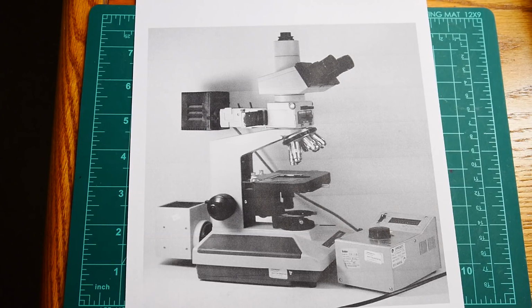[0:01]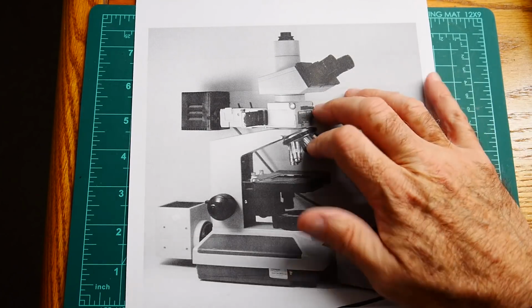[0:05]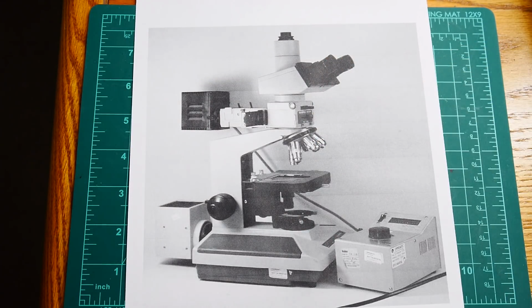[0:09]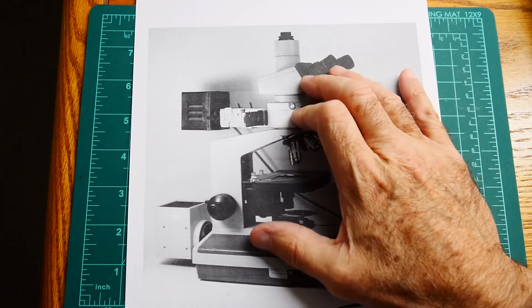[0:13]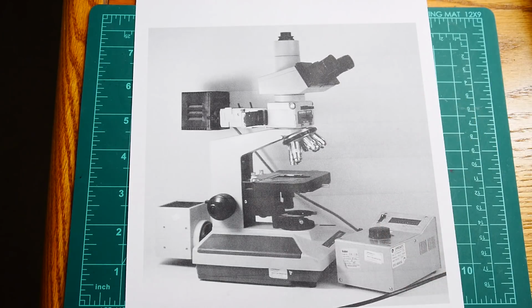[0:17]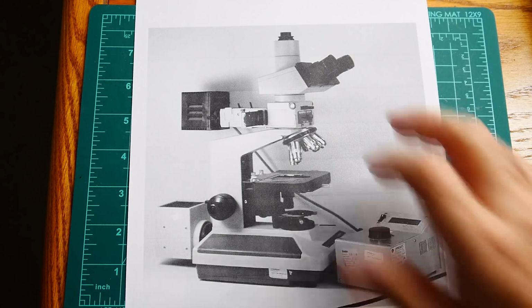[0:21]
So I thought I'd talk about microscopes. I used to have one of these microscopes. It was very nice, and it was great. I loved it. But it's very big, very heavy, took up lots of room. And I got an offer that I couldn't refuse, so I sold it. And then immediately hated that I had sold it.
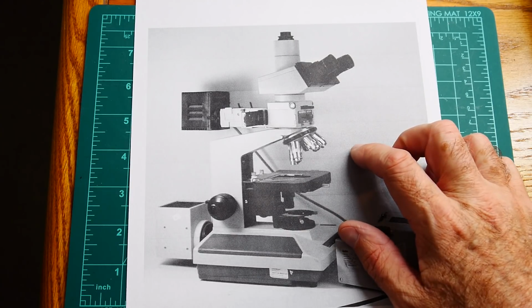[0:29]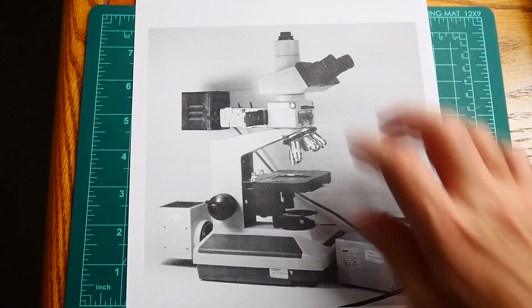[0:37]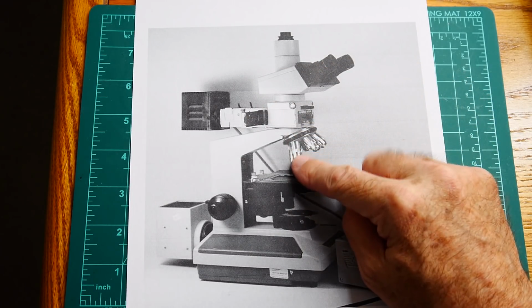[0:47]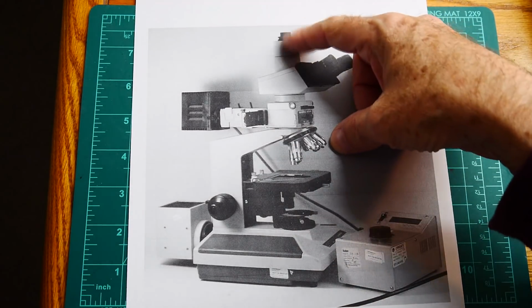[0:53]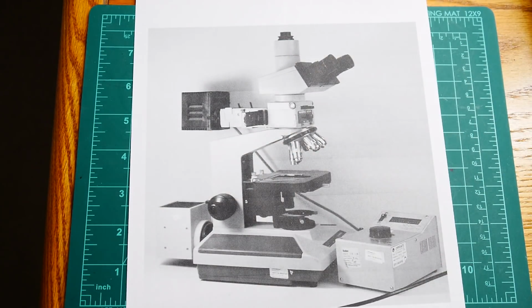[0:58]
Because it is good for really, really fine stuff. I have a nice stereo microscope, which I use, you know, 95% of the time, but when you need one of these, you need one of these. And so I thought, well, maybe I don't need all of it. Maybe I just need pieces of it. I need a good objective lens. I really don't need to be able to look through it because I'm just going to put a camera, and I can just look at the image through the camera.
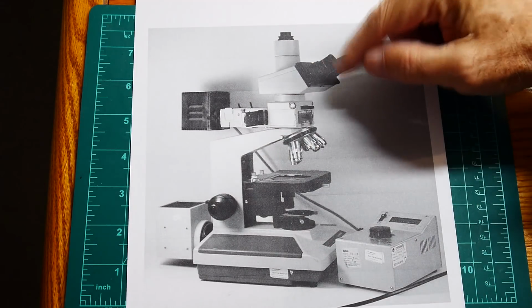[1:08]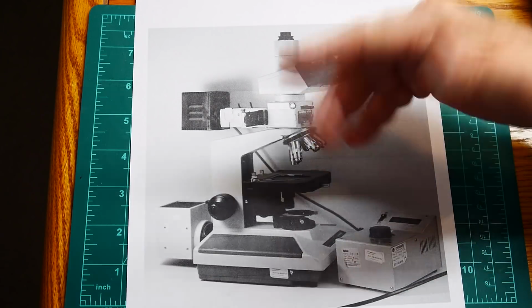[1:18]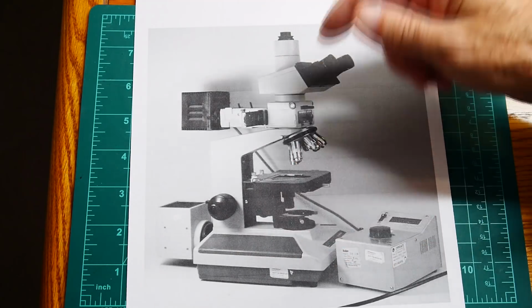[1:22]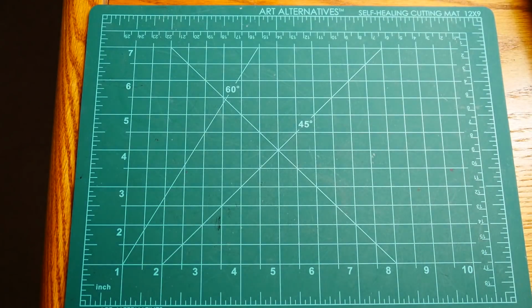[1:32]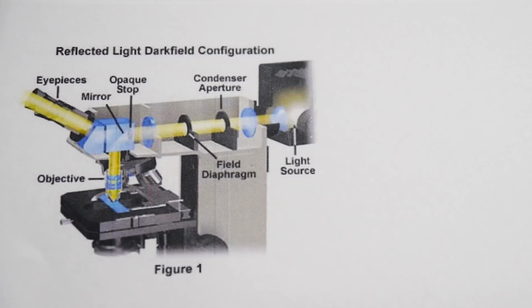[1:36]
So I thought maybe I could just strip this down and do with a very, very little of it. But the one thing that these have that makes them so valuable is they have what's called dark field illumination. You can set this up so the illumination comes from the bottom. So if you're doing biological slides and stuff, you need to see through the material, you can go from the bottom. But what I really use these for is for the top illumination, which is called dark field illumination. So let me describe what dark field illumination is. All right, there we go. We can see it better now.
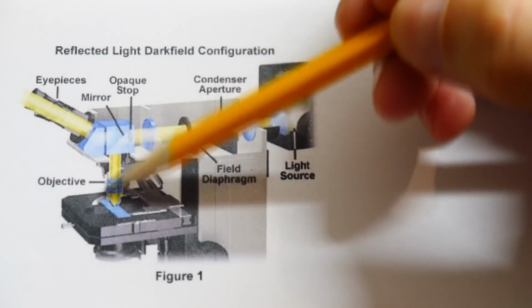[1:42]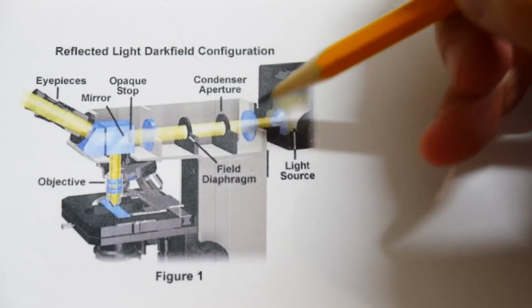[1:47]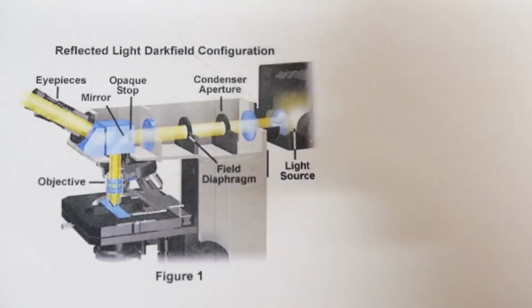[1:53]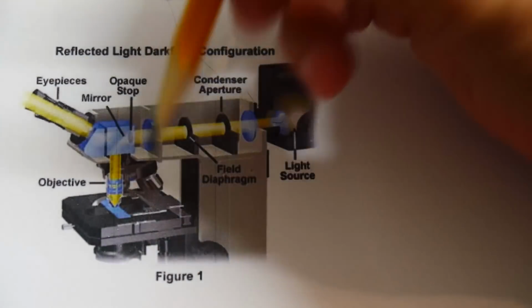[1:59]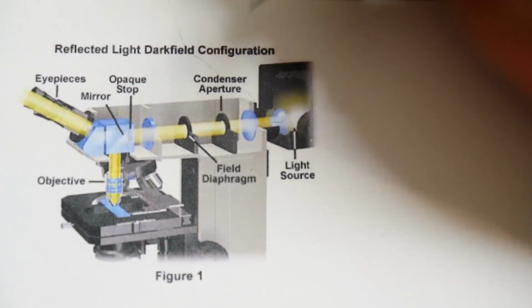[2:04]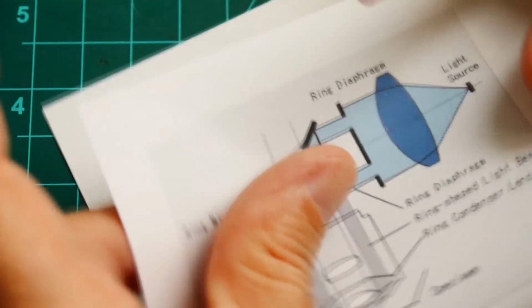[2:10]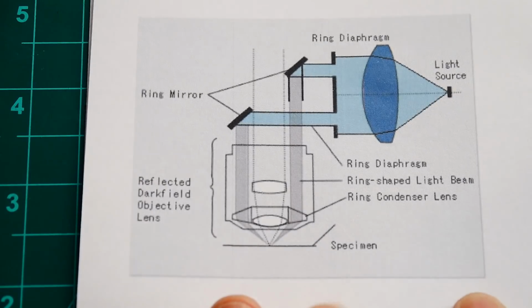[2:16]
So you look through the eyepieces and it goes down through the objective. So that's the normal path. But there's this big thing in the back here. There's this light bulb in the back and some condensers that make the light parallel. And then the light comes down and actually light comes in from the top. And you have to have very special objectives called dark field objectives that allow the light to come from the top and for you to be able to see from the top both, right? So that's a bit complicated. So let's look here at a different picture that'll make it a little clearer. Okay, there we go. All right, so this is not to scale, but it gives you the idea.
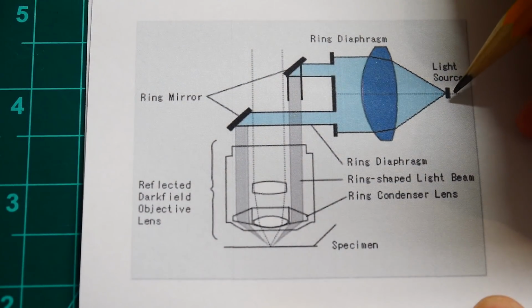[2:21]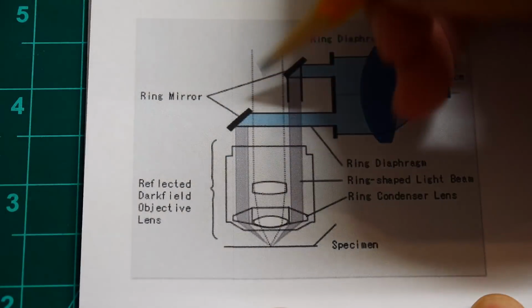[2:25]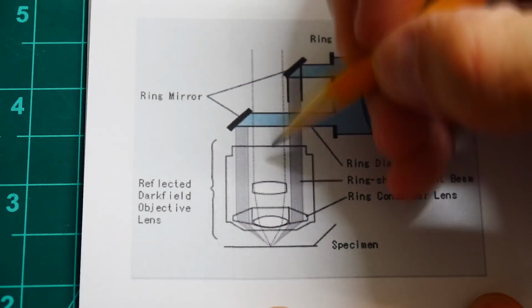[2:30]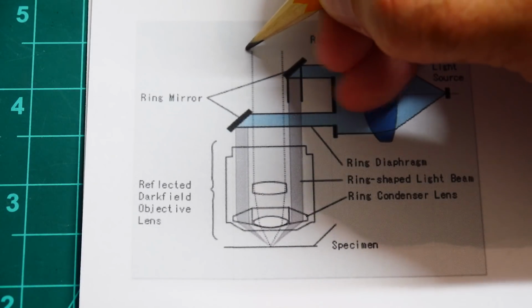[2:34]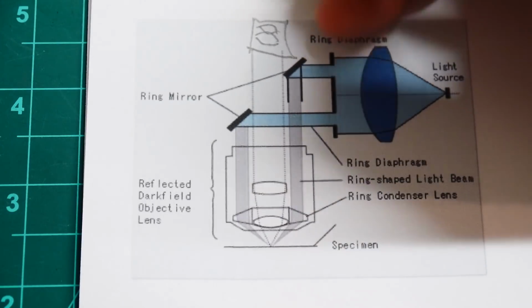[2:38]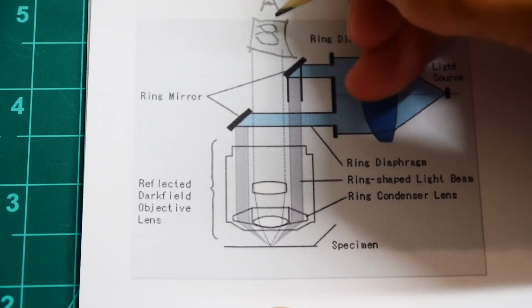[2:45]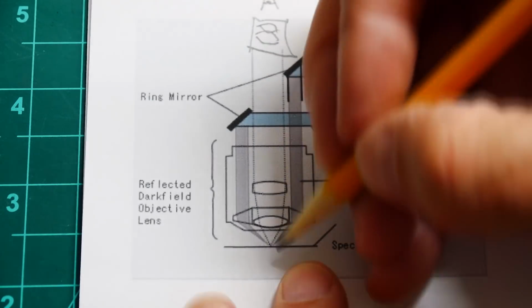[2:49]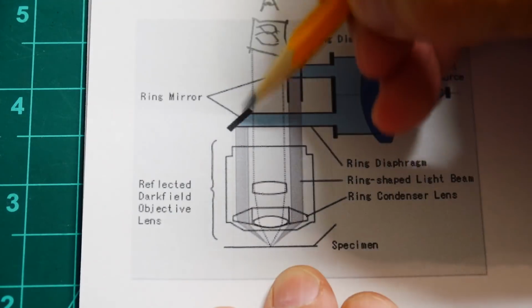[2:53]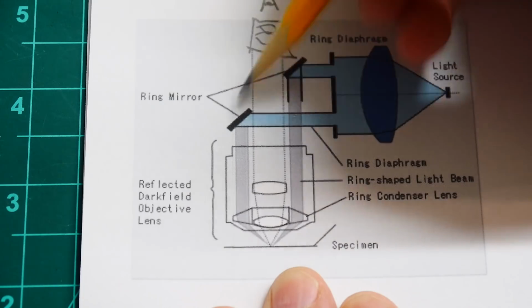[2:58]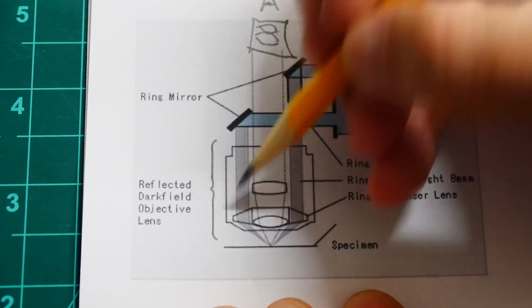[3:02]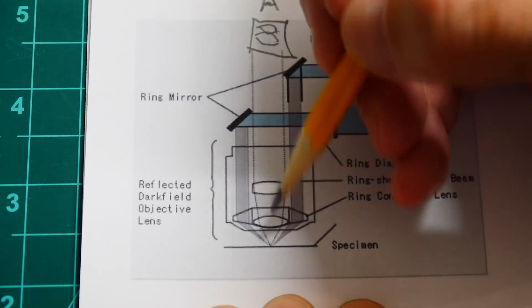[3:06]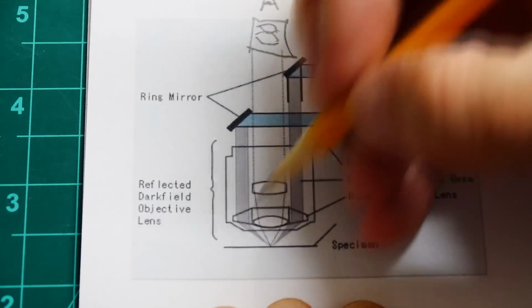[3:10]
There's a light bulb back here and a condenser that makes the light parallel. And then there's this mirror that looks like a donut. Okay, there's a hole in the middle of it, so you can look down. So up here you would have your eyepiece, right? You have some lenses in here and your eyepiece, and you would look down this direction, and you would go down the tube of the microscope and then the objective of the microscope, and that's how a microscope works. But what this has is it has this ring of light. So the light bulb goes to this donut mirror, and there's this donut of light that comes down the tube also. So you look down this dark area, and then there's this bright light in this donut shape coming down.
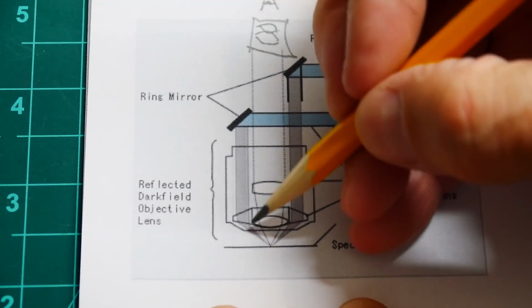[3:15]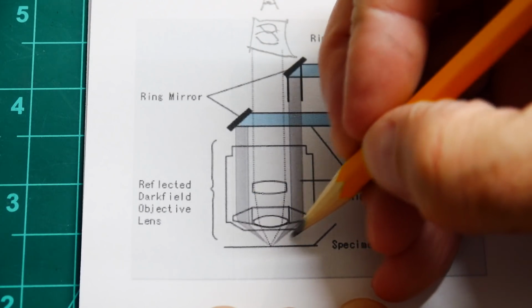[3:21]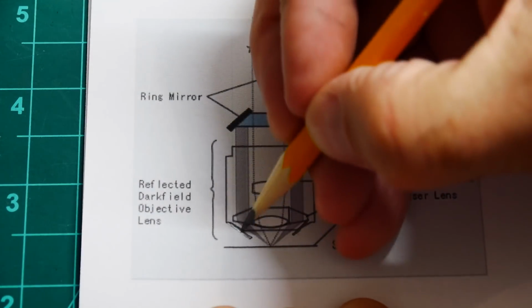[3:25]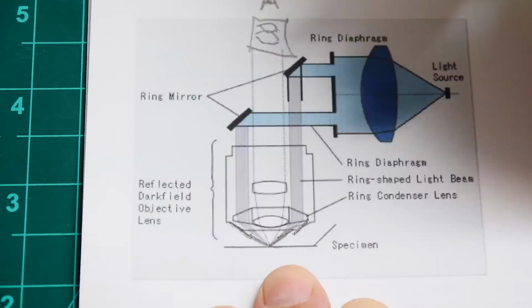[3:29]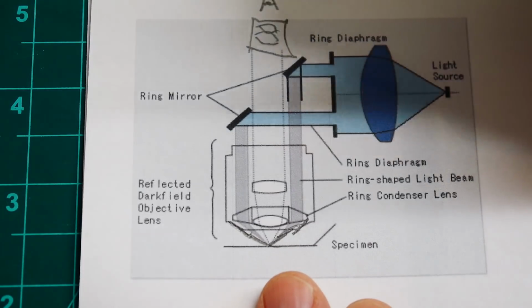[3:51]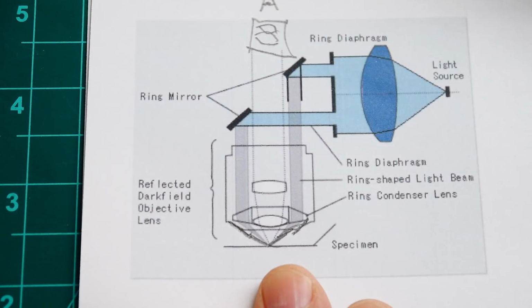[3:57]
And then the dark field objectives have either a lens here that directs the light, or it can actually have a mirror at the bottom here where the light strikes the mirror and then it bounces off of it and it hits the object that you're trying to look at. So these dark field objectives are quite fancy, and you need a fancy microscope to use them because you need to create this ring of light and everything. So that's why these microscopes are so darn expensive. And I thought, well, I guess that's what you're paying for, and that's why I got a good price for my microscope. But I still wanted to have something like this, and I really wanted this dark field illumination.
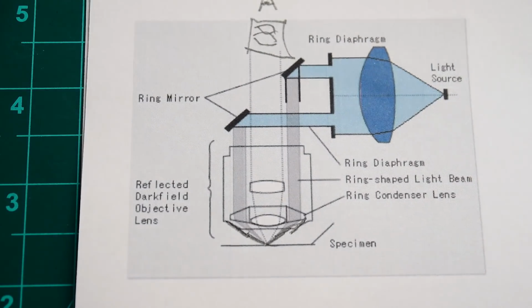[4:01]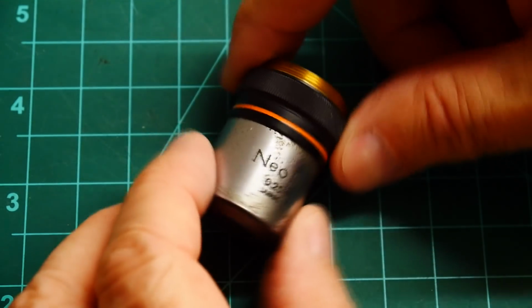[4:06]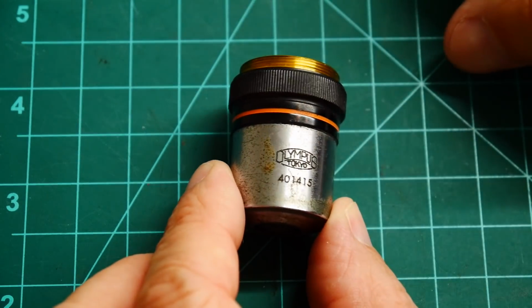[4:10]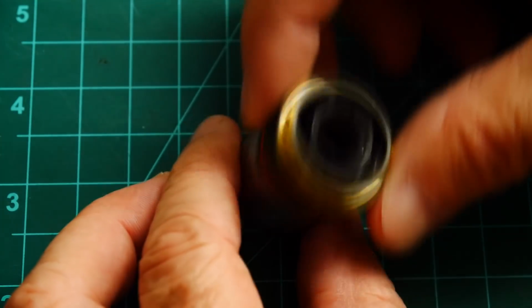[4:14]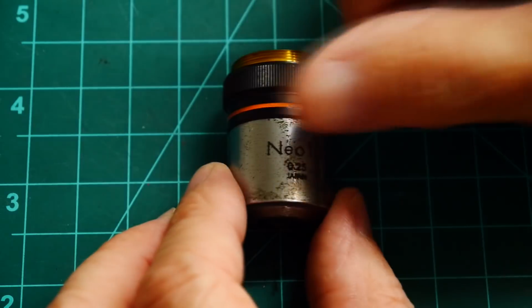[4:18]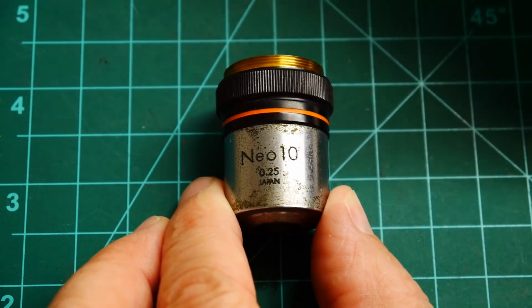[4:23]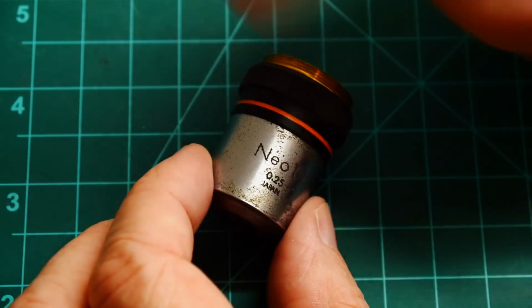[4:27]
So I went on to eBay and found some objectives. Okay, so this is a dark field objective. A lot of these nice microscopes were made by Olympus. So this objective has a bit of rust on it, but that doesn't mean that the glass is rusty. The glass is just fine. This is a Neo 10. It means it's a 10x objective. Neo is their group of lenses that have dark field illumination in them.
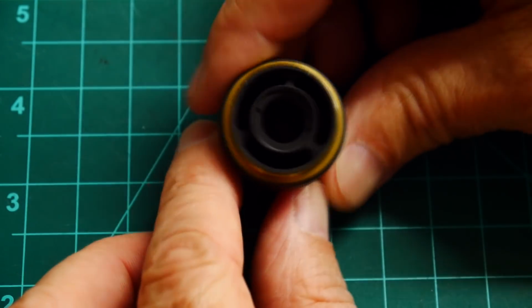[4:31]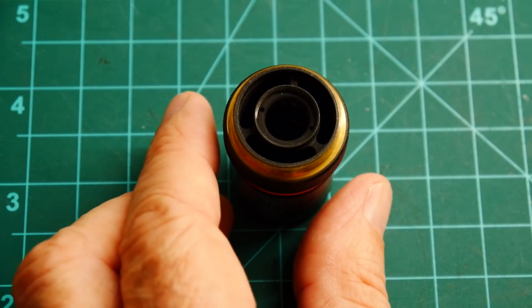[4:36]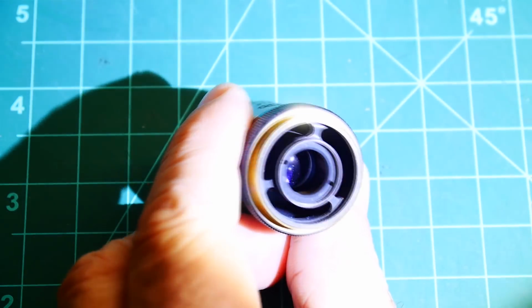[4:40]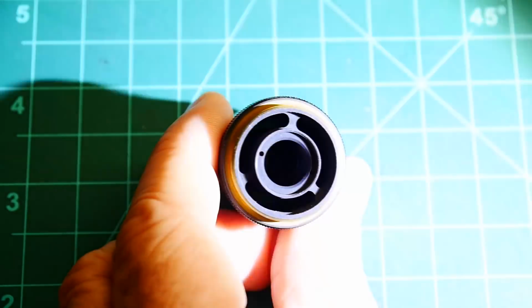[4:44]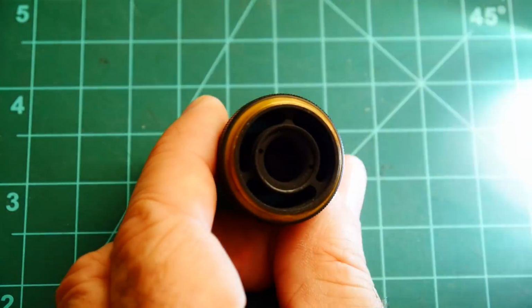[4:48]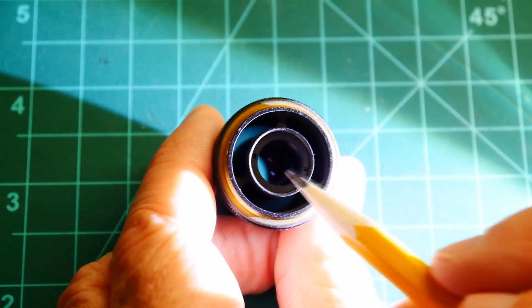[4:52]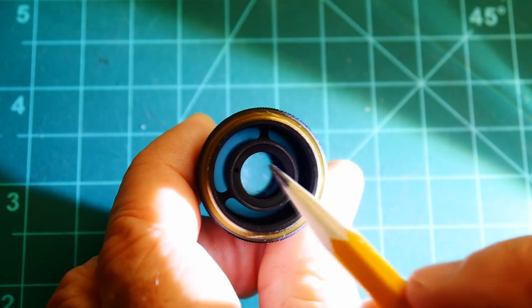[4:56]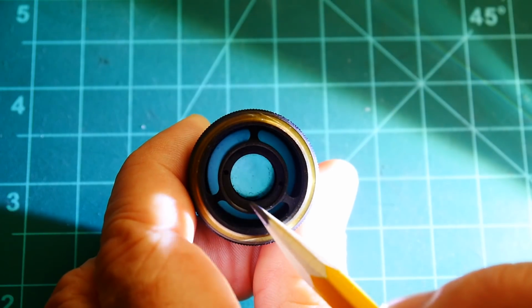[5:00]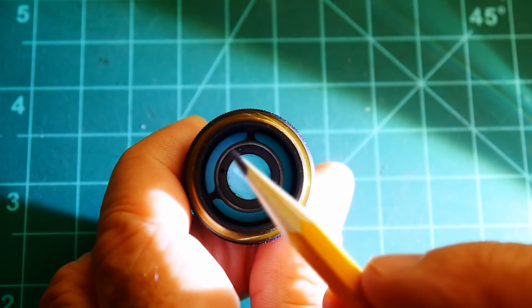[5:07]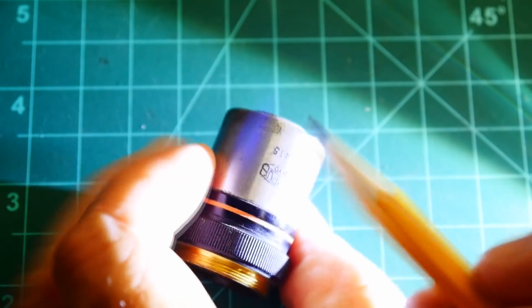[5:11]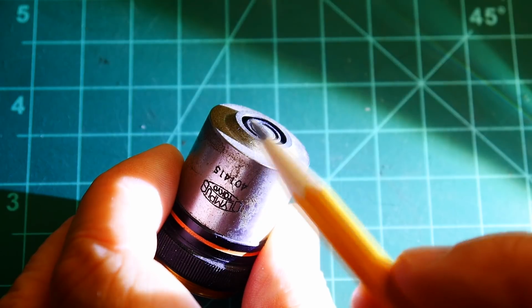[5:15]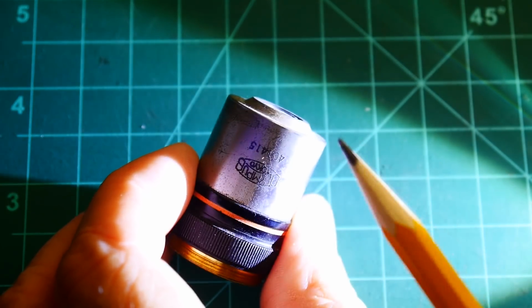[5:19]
So if we look from this direction, let's see if I can find another light source here so we can kind of see what's going on here. So you can see there's a center section there. There's this center section here, so that's where you look through the microscope, and that is where you see the image. And then there's this ring here, and this ring is where the donut of light goes through. And so the light goes around the outside, and you look through the inside. So the light has to come down the tube, and then here there must be a little mirror or a lens or something that makes the light go towards the center.
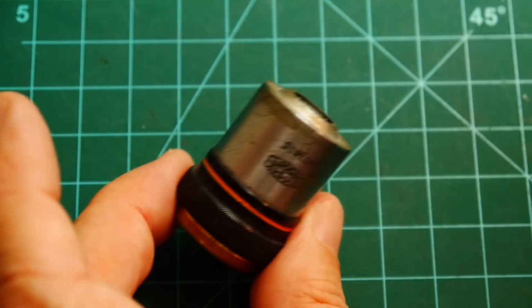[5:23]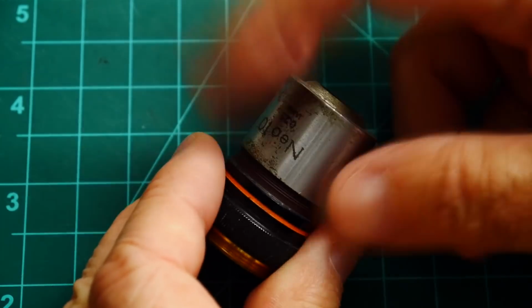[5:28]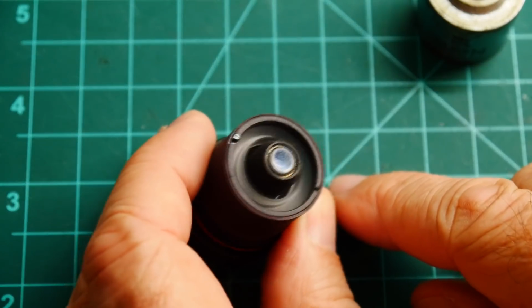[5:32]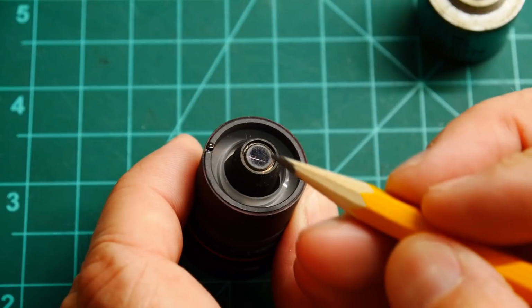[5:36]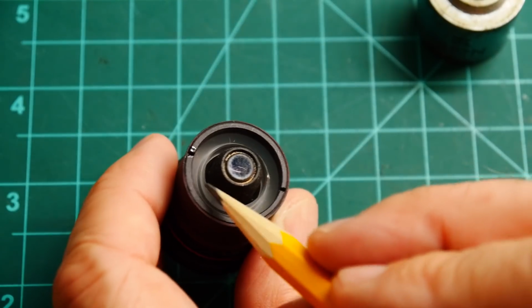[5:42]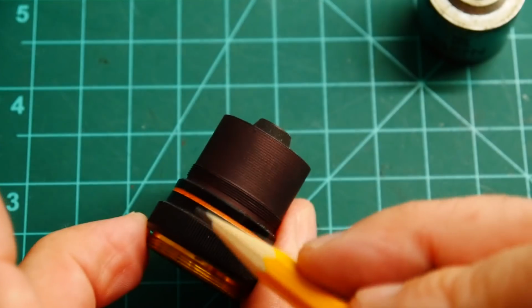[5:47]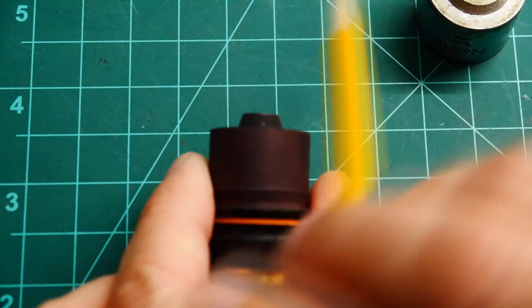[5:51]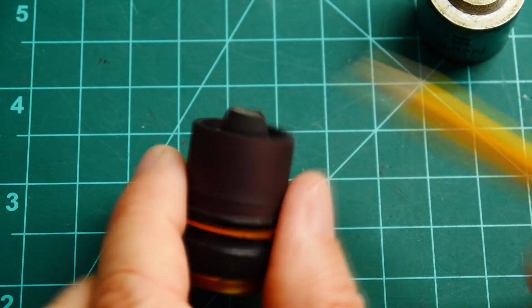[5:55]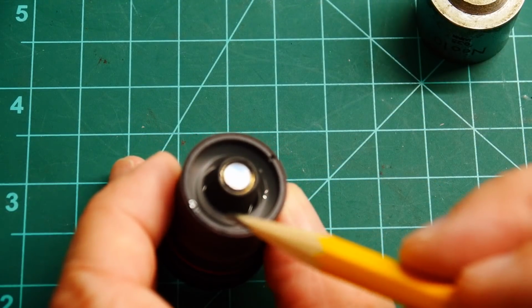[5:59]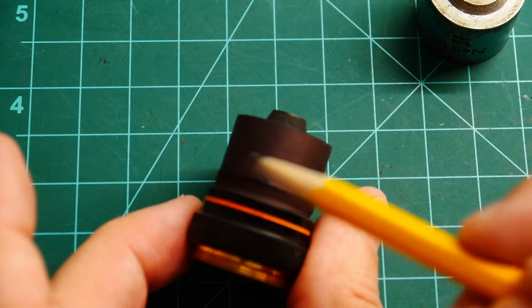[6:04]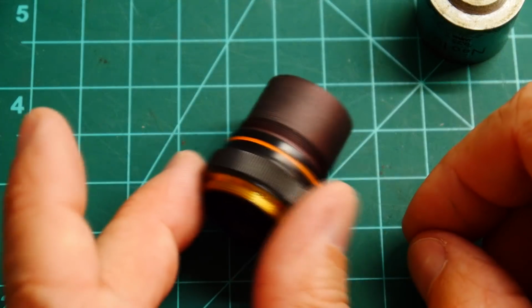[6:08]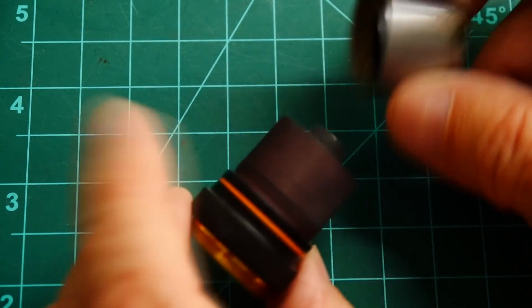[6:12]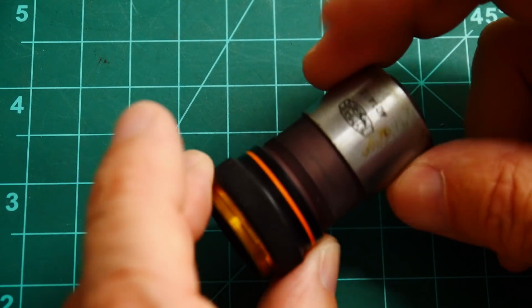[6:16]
So let's see if we can't open it up. All right, so we can see the tube here. So this is a little bit better. So this is the actual lens, that's the microscope part. And then there's this lens down here that's a toroidal lens, it's a donut lens. And it does the job of taking the light that's coming down the tube and focusing it at an angle in a donut shape. So it's a ring light. So it creates a ring around the object you're looking at. So this is a pretty expensive little piece of glass down here, this toroidal lens. One of the reasons these guys are expensive, but these guys have kind of gone out of fashion, and a lot of people will sell you one that's rusty or doesn't look so nice. So you can pick these up for maybe $40. So I did that. I got some of these for $40.
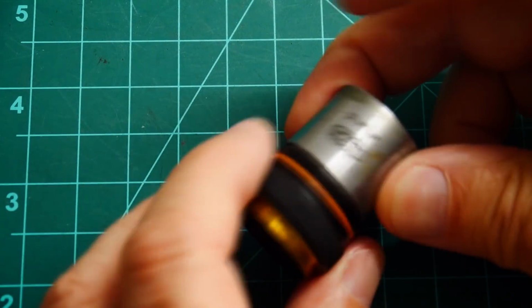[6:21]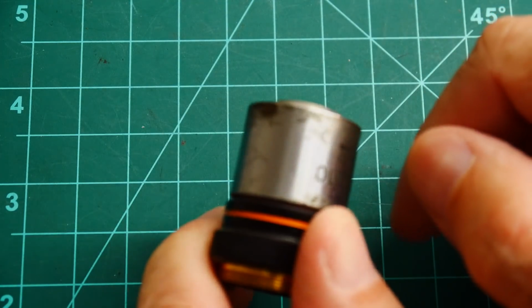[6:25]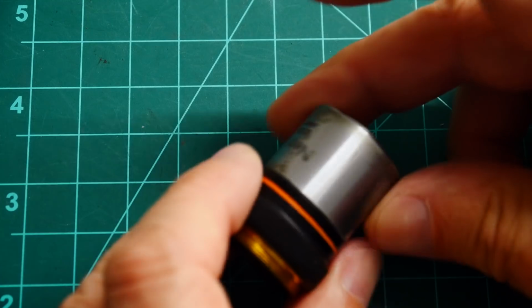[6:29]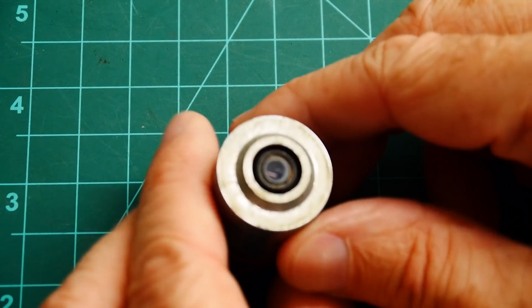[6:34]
The cheapest ones are probably the 10X. Those seem to be pretty common. 20X will cost you a little bit more. 40X a little bit more. So now I have at least part of the microscope.
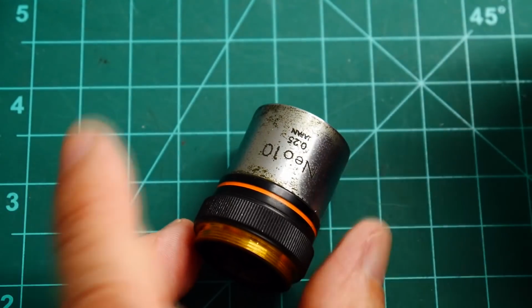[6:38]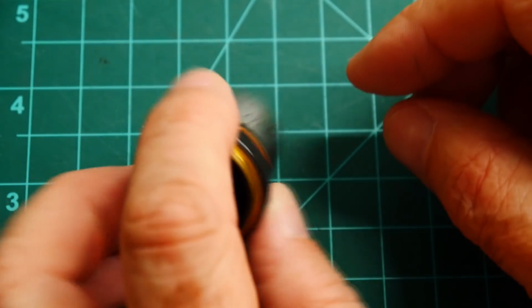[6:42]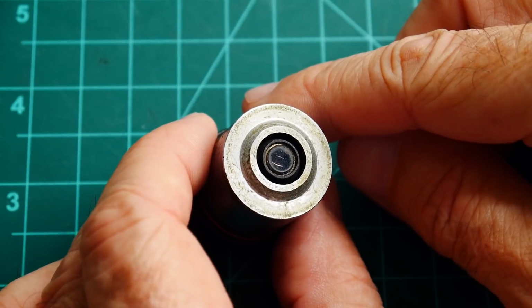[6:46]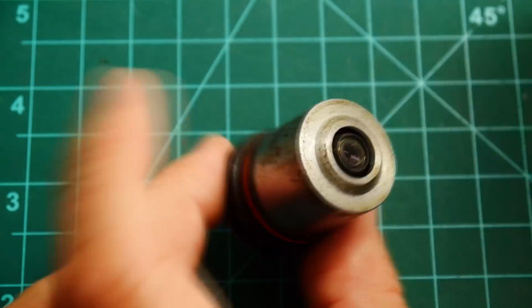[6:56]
I have the objective, but I need a way to create a donut of light, and that would be very expensive. I thought, well, if I just need to create a donut of light, that's the same thing as a ring light. What if I had a super tiny little ring light that I could put in here? So I said, well, I'm clever. I can make my own.
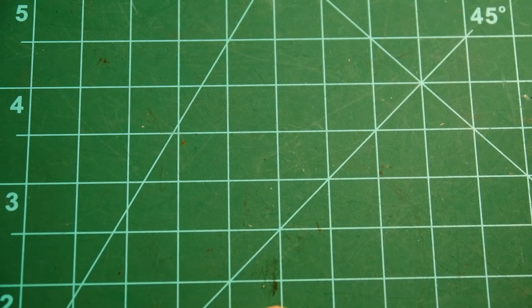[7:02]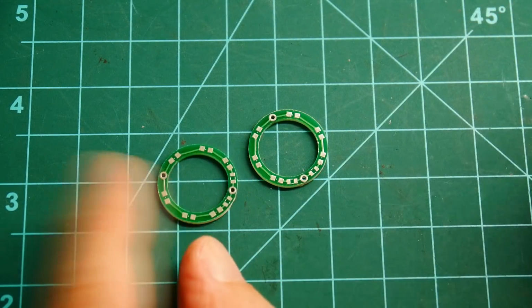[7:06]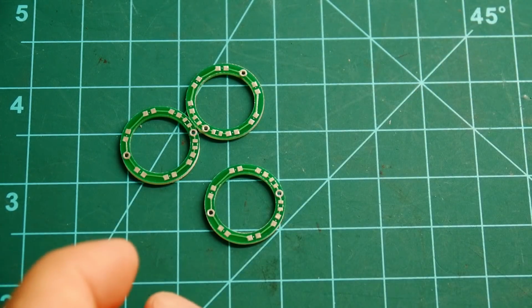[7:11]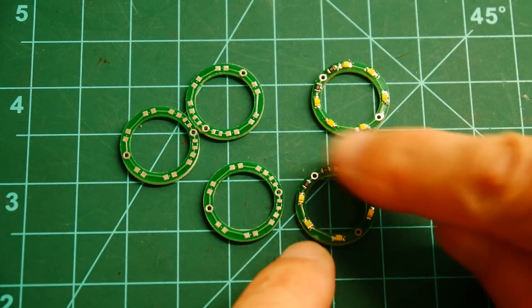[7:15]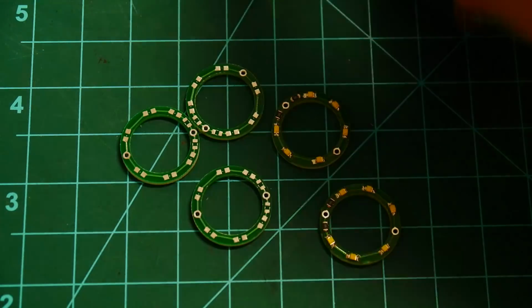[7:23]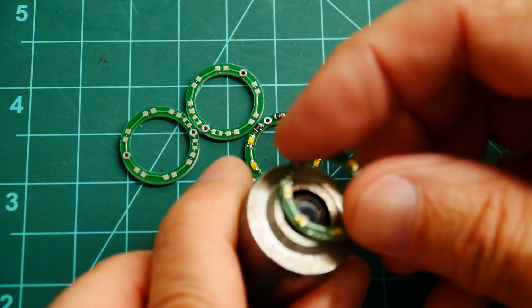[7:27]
I laid out a little PC board that has, let me show you a loaded one. So here's some that have the LEDs on them. They have 6 LEDs in a ring. And so this is a tiny little ring light. I have an objective and I have a tiny little ring light.
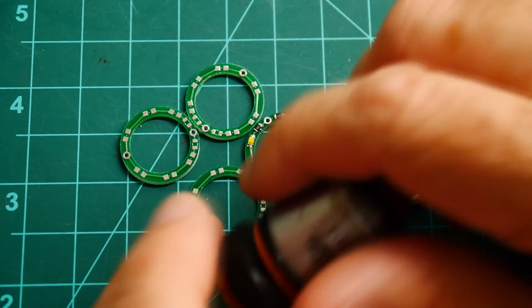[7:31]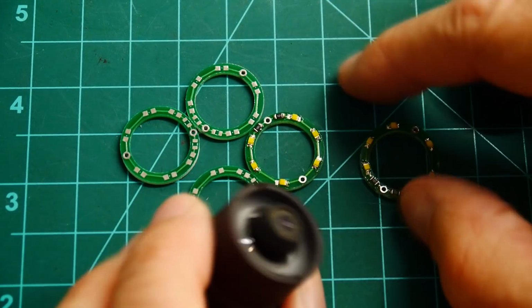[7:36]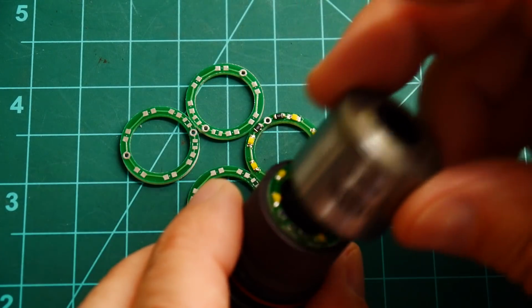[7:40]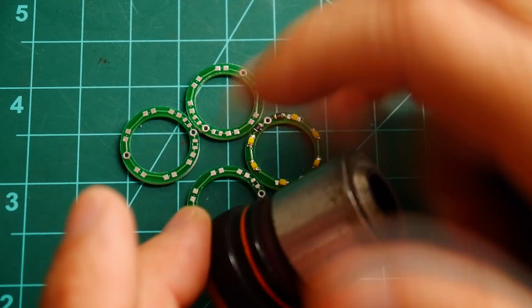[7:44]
You might even be able to do something like that, but I thought, oh, I'm more clever than that. I can open this up and I can put the ring light inside and then just put it all back together again. That's what I did.
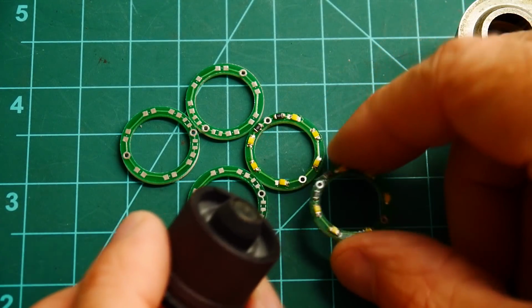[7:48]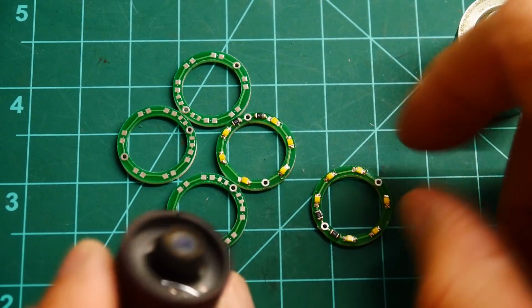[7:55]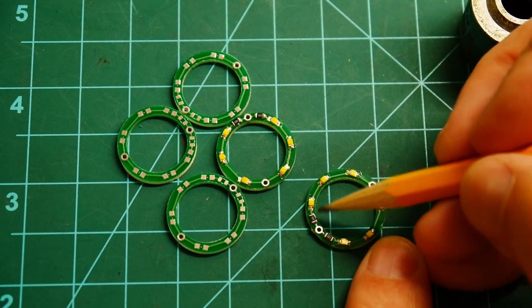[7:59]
Made these such that there's a resistor and then 3 LEDs and then a resistor and 3 LEDs. So you connect here and here with 12 volts. This is a 120 ohm dropping resistor. So 120 ohms and some LEDs and they turn on.
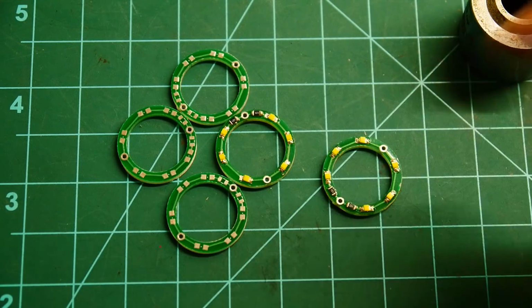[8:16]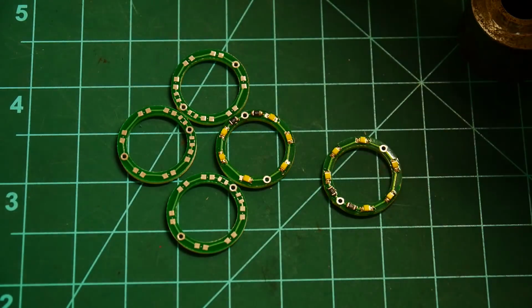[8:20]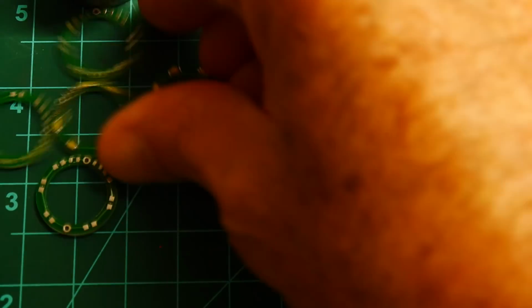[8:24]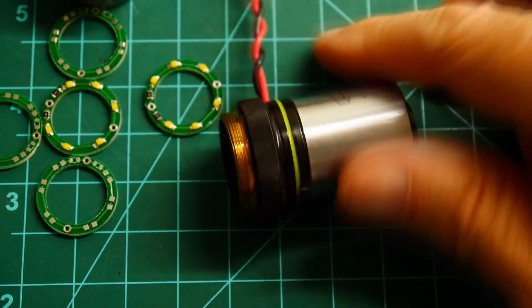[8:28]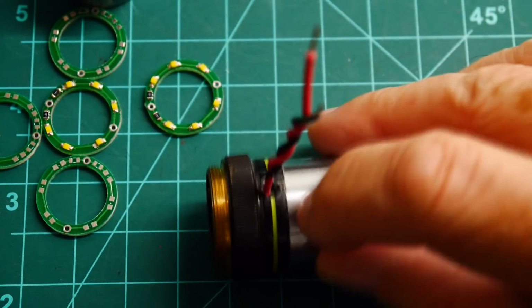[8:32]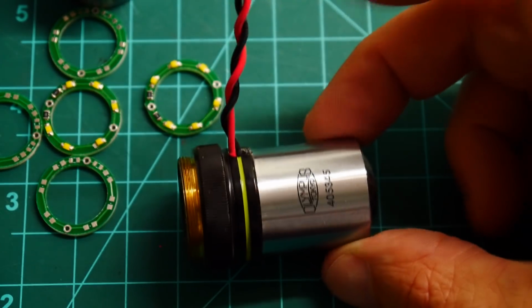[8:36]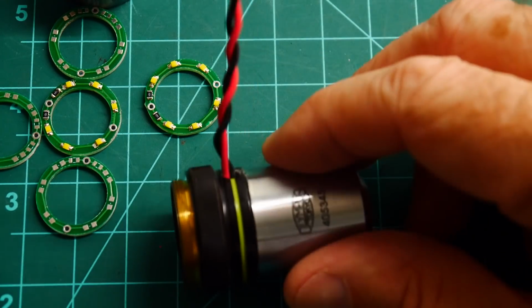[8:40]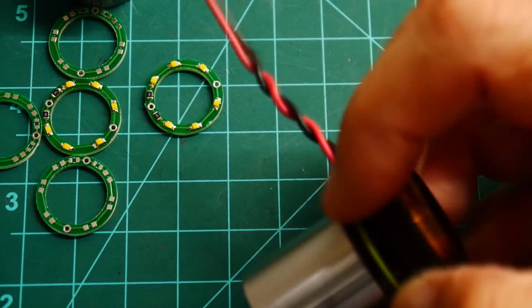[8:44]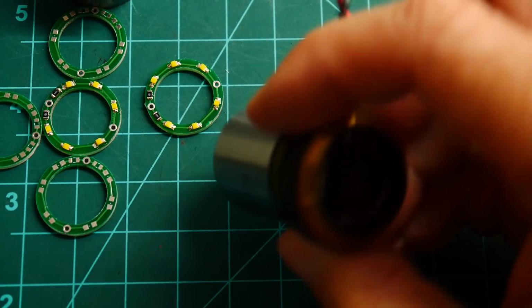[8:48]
Let me show you then what I did. Move these out of the way. So here's one that's complete. The ring light is inside. I drilled a hole in the side of the objective and brought some wires out. So all I do now is I can screw this onto a microscope. I can put 12 volts here and then it lights up with a ring light.
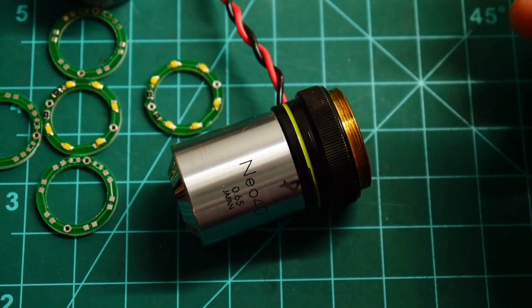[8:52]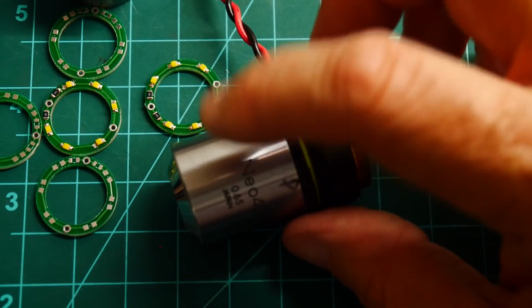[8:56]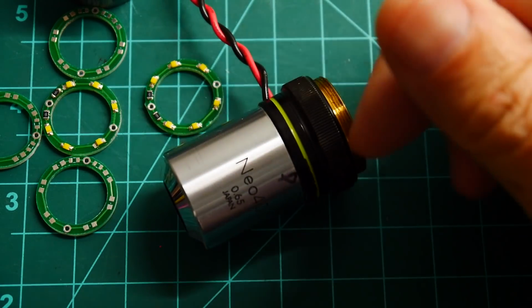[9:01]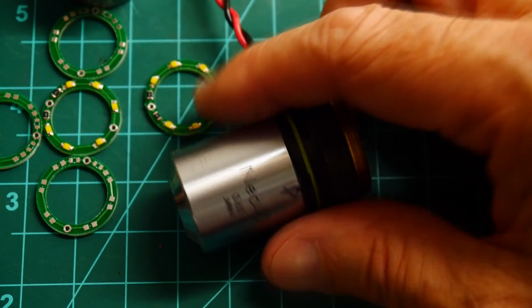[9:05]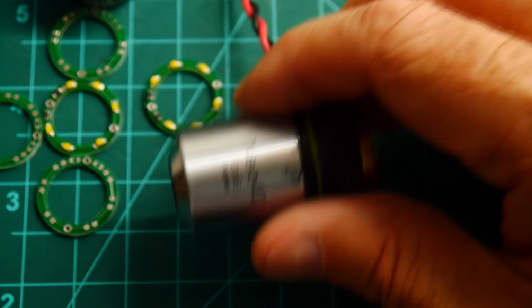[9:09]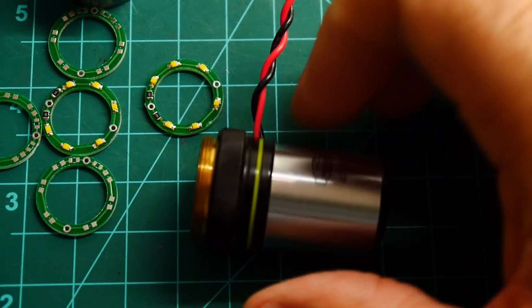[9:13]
And I have a couple of these now. I have a 5, 10, 20, and 40. I shop eBay, wait for them to go super cheap. I've bought them really, really cheap. Like I said, the 40 is going to cost a little bit more than the 10 or the 20. The 40 is not all that valuable, I think.
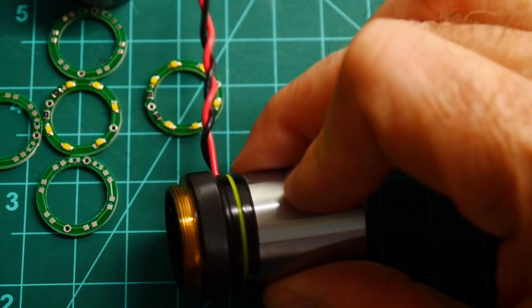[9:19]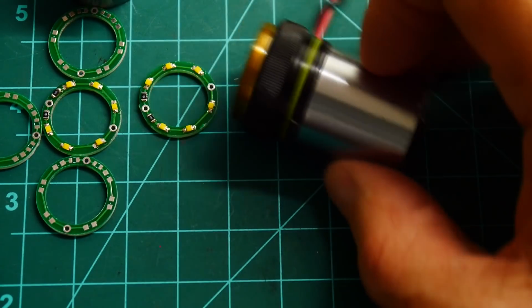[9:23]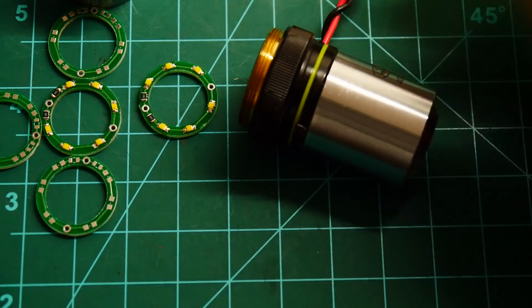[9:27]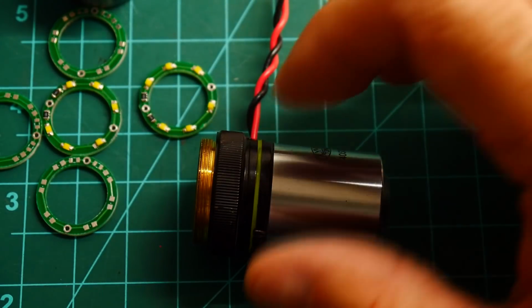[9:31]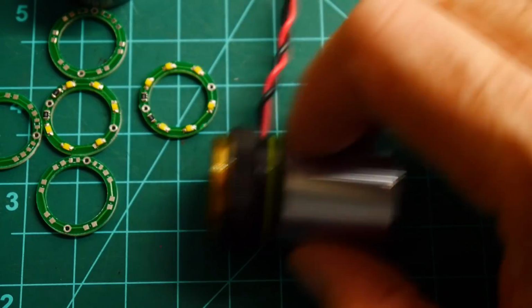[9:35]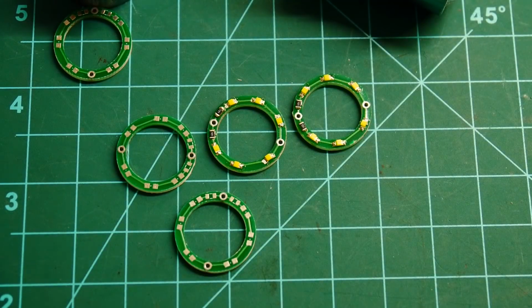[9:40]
It's way too much power, but a 10X is a really good workhorse. And if you need to get close, the 20X is quite good. If you don't have a stereo microscope that has a low power, then the 5X can be of value. I don't find it very valuable because I have the stereo microscope, but these work pretty good. So let me show you what my final setup looks like.
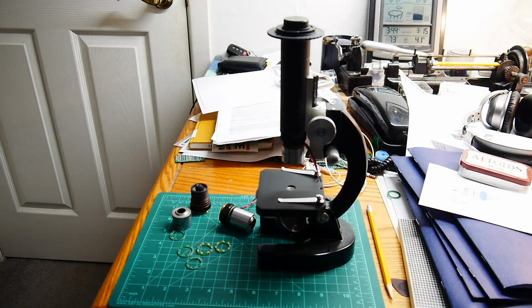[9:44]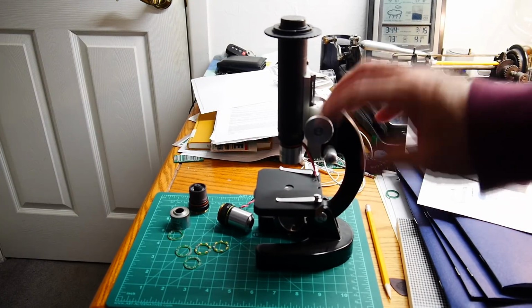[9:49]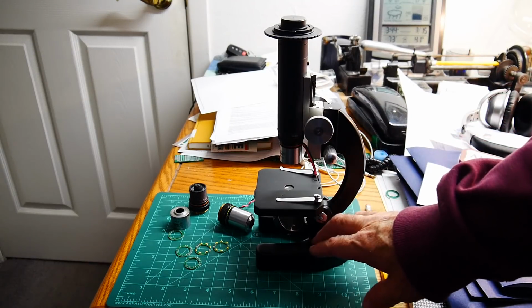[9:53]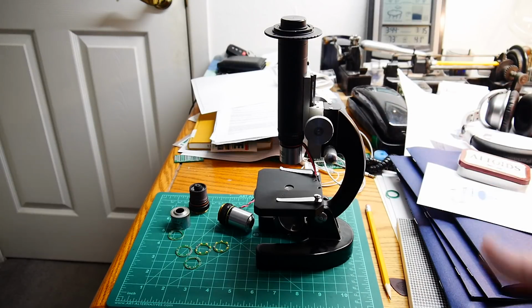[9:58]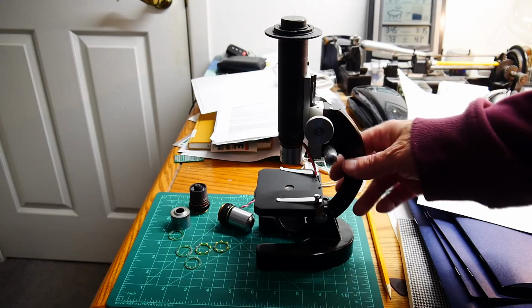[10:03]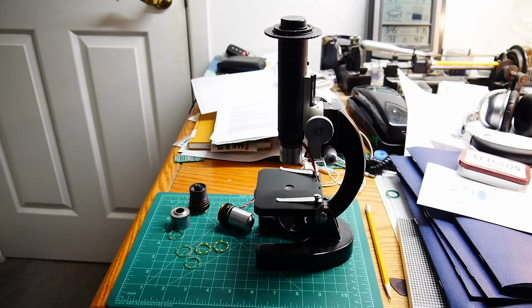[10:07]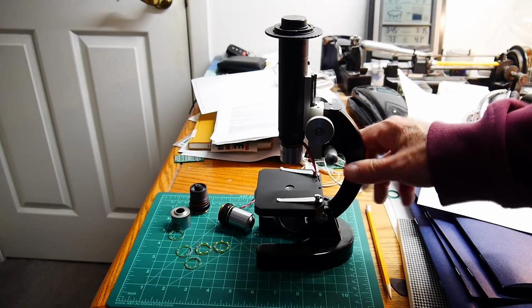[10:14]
Okay, so this is what I did. I wanted still to have a microscope, so I bought this Tasco microscope. Now, Tasco is a very, very cheap microscope. Almost might be below student grade, almost like a toy. But they're an old toy. They were built in the 1950s or 60s and stuff. So they're all metal construction. So even though they were kind of toy or I'd say student grade, they're quite good construction.
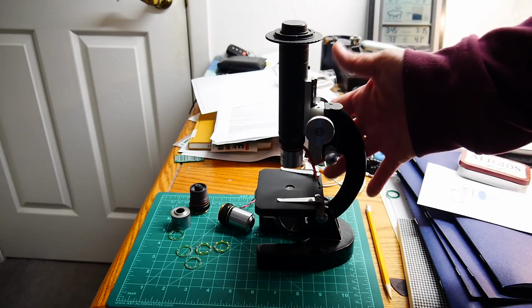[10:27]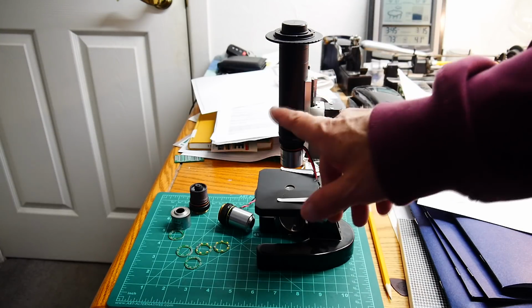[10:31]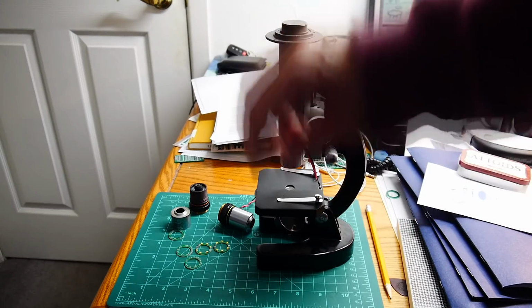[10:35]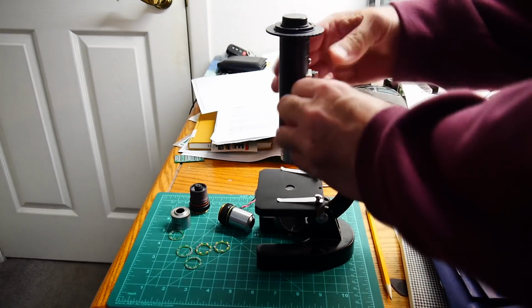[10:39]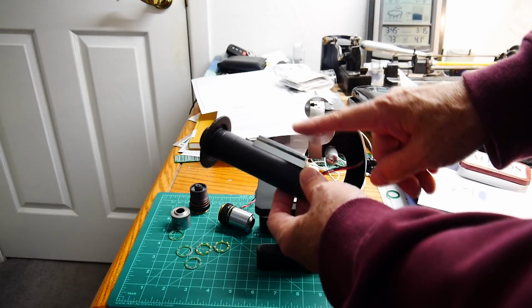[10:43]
They're all metal construction. They have a nice rack and pinion focusing. They have a fine focusing adjustment. It's not the greatest in the world, but what I really like is the size. This is a tiny little microscope. And what I did was I took their tube and objectives and eyepiece and everything, and I threw that away. I took the rack and pinion, and I screwed it onto just a tube.
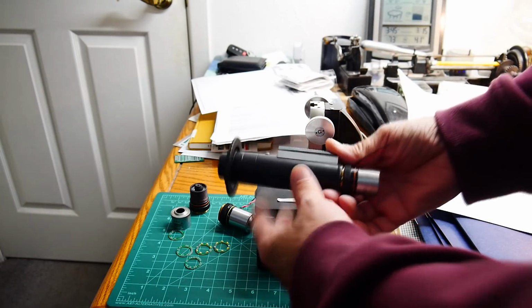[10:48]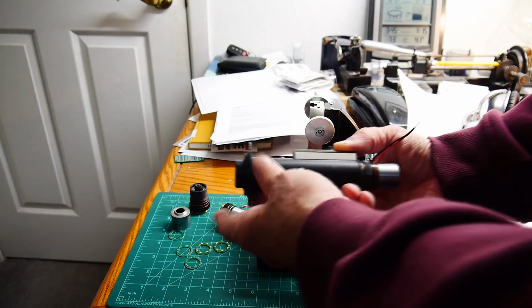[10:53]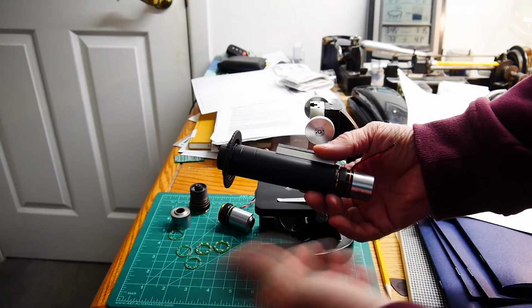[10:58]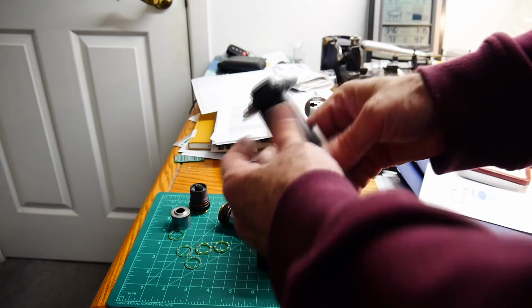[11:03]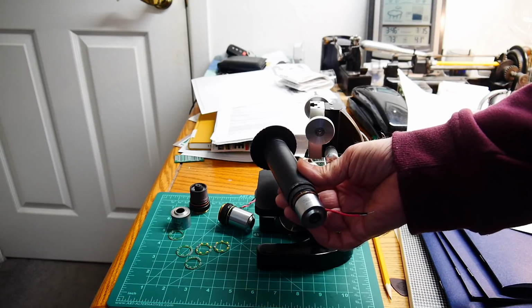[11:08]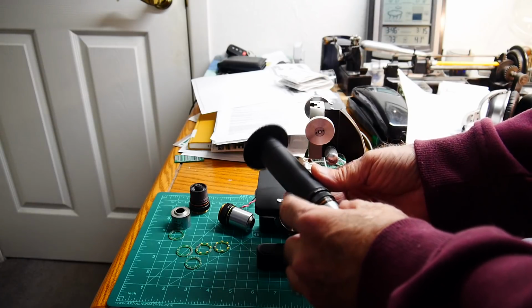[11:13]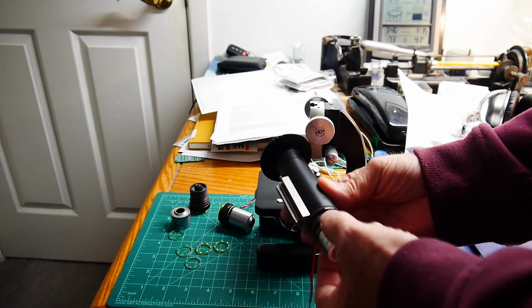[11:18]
This is what optics people have, one-inch tubes. They're threaded tubes, and they're just for building, kind of like breadboarding optics. They're just a clear tube. And what I did with the clear tube is I bought an adapter. So Thor Labs, T-H-O-R, Thor Labs, sells an adapter that goes from one-inch thread to microscope thread. So I bought this adapter. That cost me about $26, something like that.
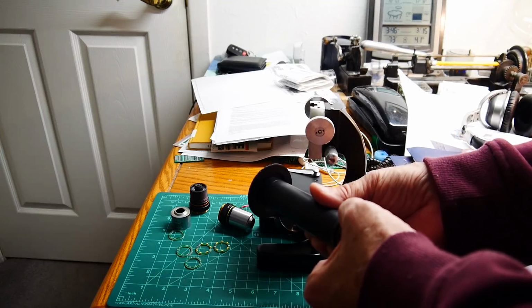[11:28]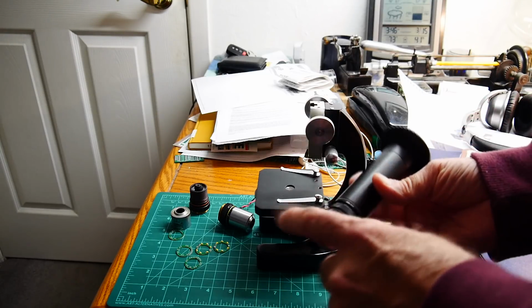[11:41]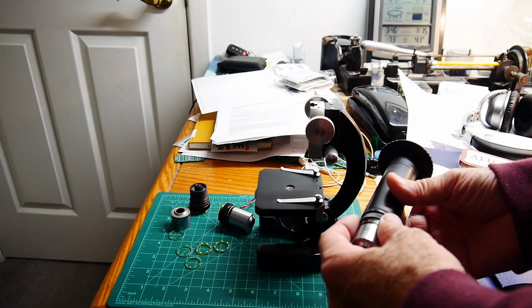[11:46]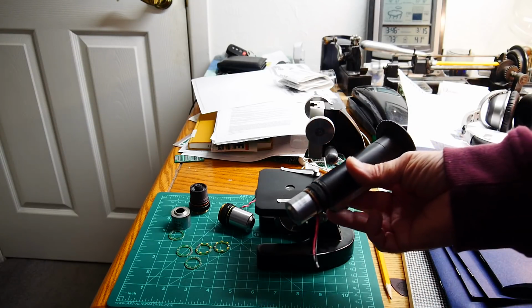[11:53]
Thor Labs, it's called an SM1EXT. Or an SM1A12. That sounds familiar. I think that's the part number. So that's the adapter that I used. And it goes from, like I said, this 1-inch to these 26-millimeter, 25-millimeter. I don't remember. It's a funny metric thread that's on the microscope Olympus dark field objectives.
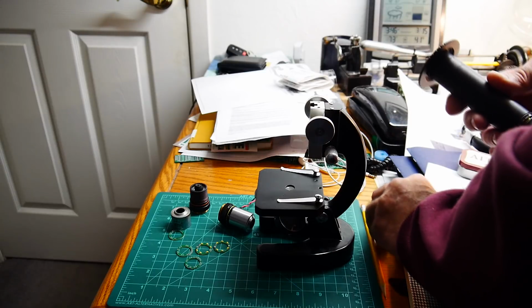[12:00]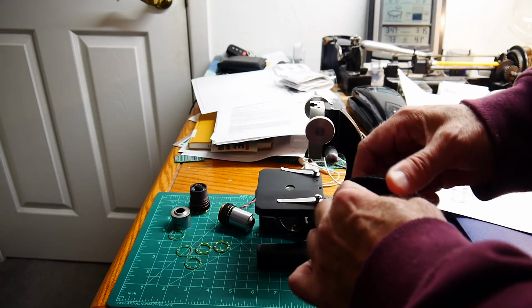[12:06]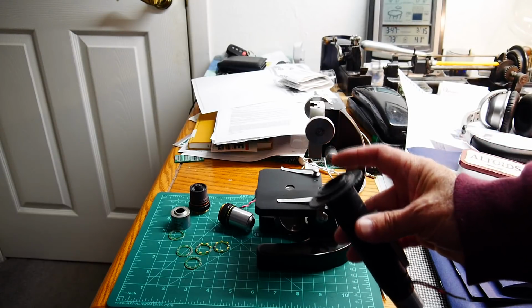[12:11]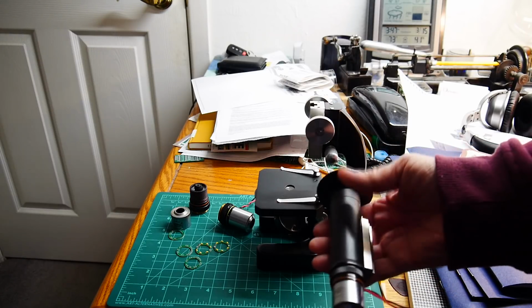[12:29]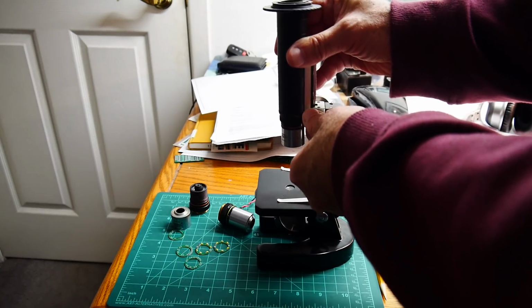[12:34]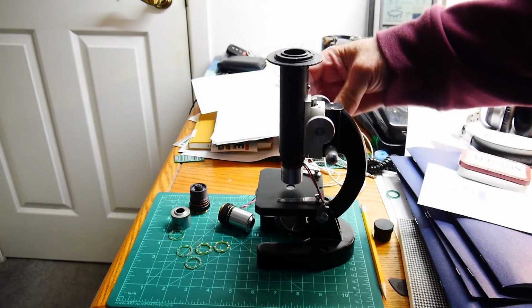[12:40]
And then on this side, I got myself an adapter. I have a 4/3 format camera, and this is an adapter that goes from C-mount to 4/3. So these are about $2, really, really cheap. And then on this end is an adapter that is 1-inch tube to C-mount. That all goes together. Here's my wires for my 12 volts. And this goes on here like such.
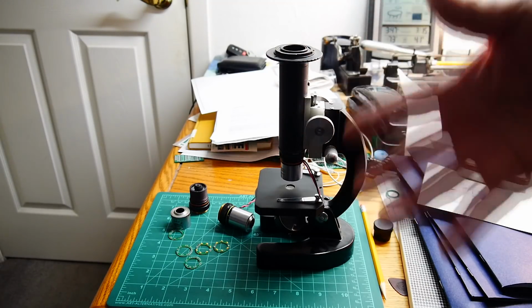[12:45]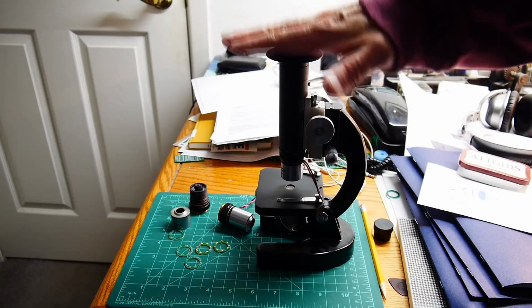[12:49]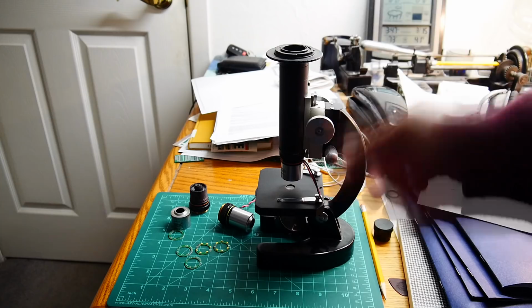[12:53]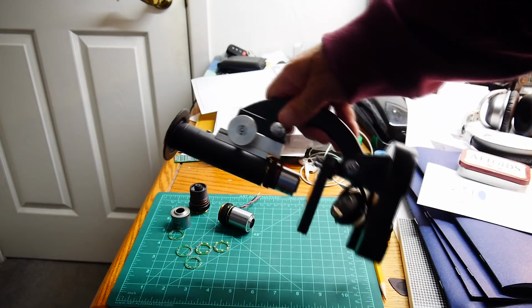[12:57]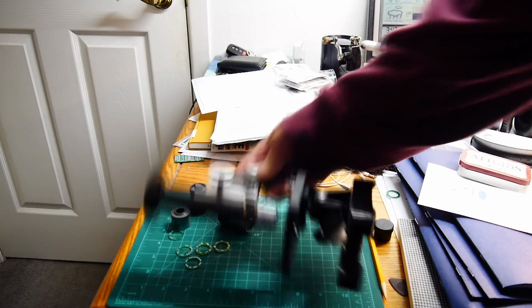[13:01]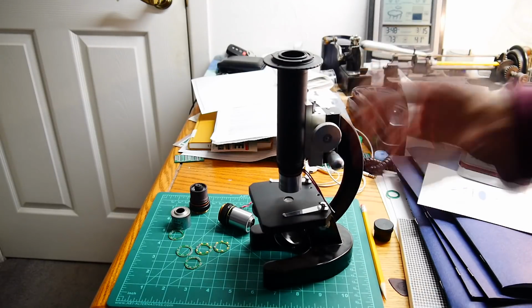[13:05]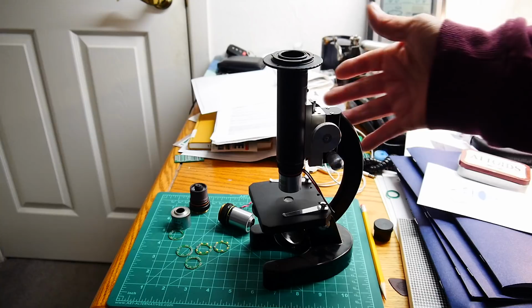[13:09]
And then I'm using the camera to video this, but the camera then would mount on top of this. And I have dark field illumination, focus. I have a whole microscope. It's super teeny tiny. It's about 11 inches by 4 inches, so it's teeny tiny. I can put it in my drawer. And it takes great images because it's using Olympus optics.
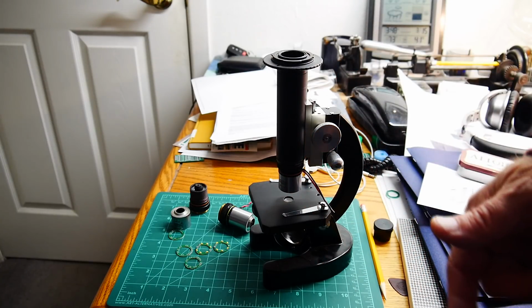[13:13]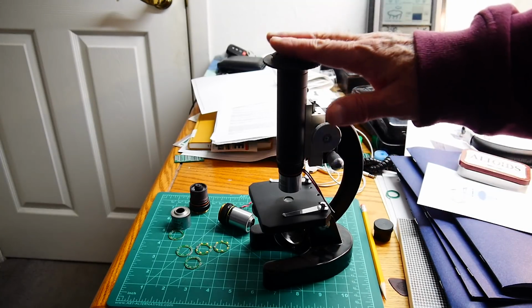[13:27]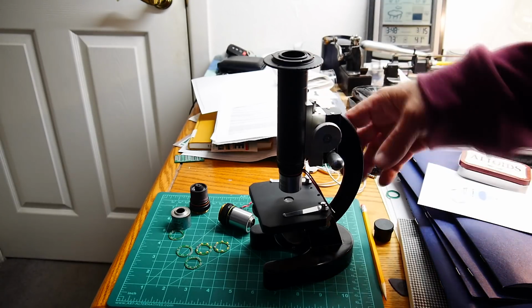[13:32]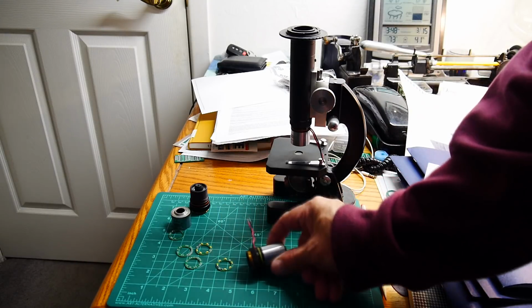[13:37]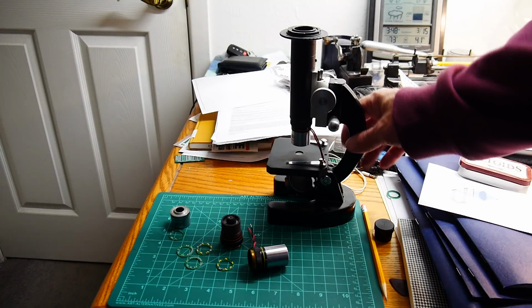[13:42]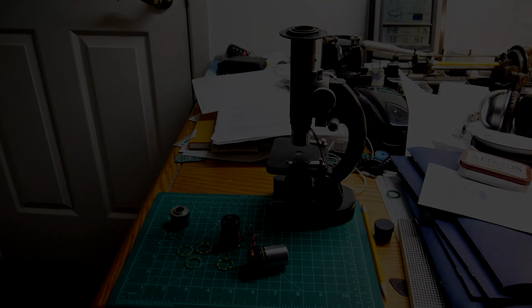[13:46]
So if you watched my 2N2222 transistor video, the last closest zoom was taken with this setup here, with the 10X objective. I also used it. I had a video on some old LEDs. I used the setup on those. All you have to do is make some little ring lights, objective, and poor man's dark field microscope.